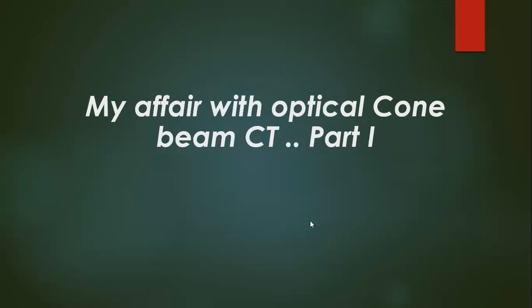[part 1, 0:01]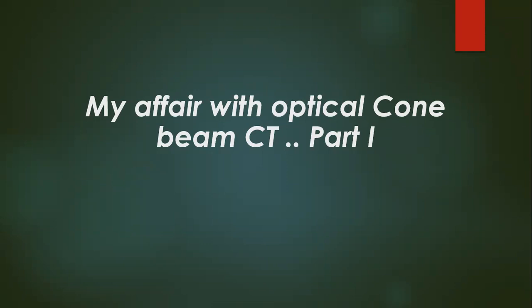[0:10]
I have been giving very serious lectures in my e-learning portal, that is the Paul's Classroom, and also in my YouTube channel. For a change, I thought I would tell you a story that is at least two decades old. The story is about how I learned gel dosimetry and how I made my first optical cone beam CT scanner for reading the dose embedded in gel dosimetry.
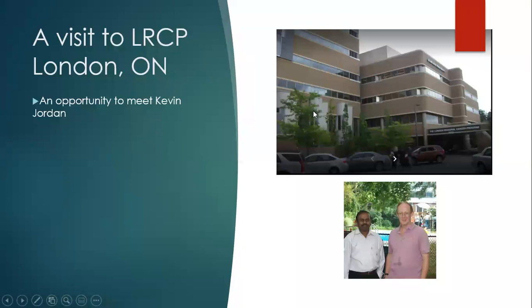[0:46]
I learned gel dosimetry during a visit to London Regional Cancer Center in London, Ontario, Canada. This is the London Regional Cancer Center that you see in the picture. In North America, the interview happens slightly differently. I was there for an interview. And the interview is slightly different from the way it happens in India.
During the interview, you are made to meet all the connected staff. In my case, I had to meet all the physics staff there. And at the end of the day, you have a formal interview with the HR staff. This is exactly what happened to me. And during the interview, I had the opportunity to meet Kevin Jordan, whom you see with me in this picture, and who was working with gel dosimetry.
He took me to his lab and showed the FX gel phantom that he had made, and also the laser scanner, as well as the cone beam optical scanner that he had made for reading the dose embedded in gel phantom.
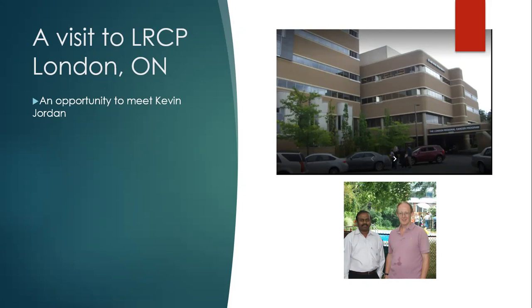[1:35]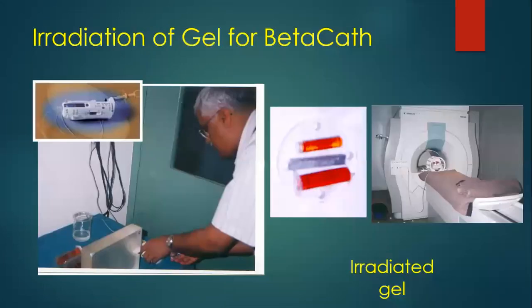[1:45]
After the interview, I returned to India, and I was very keen to make FX gel. I got the recipe from Kevin, and since we already had Fricke chemical dosimetry facility in Vellore, making FX gel was not difficult. We made FX gel and irradiated and kept on showing everyone, see the nice 3D distribution that you can see with naked eye.
Then we thought, why not we do an experiment? We took a syringe and filled it with FX gel and also put a catheter in so that we can connect to the BetaCath equipment that has the strontium 90 source in it. We irradiated this gel phantom with strontium 90 source, beta source. And then we wanted to look at the dose distribution.
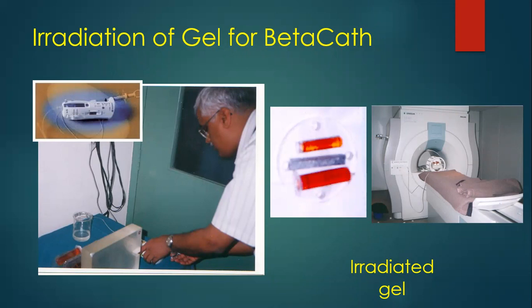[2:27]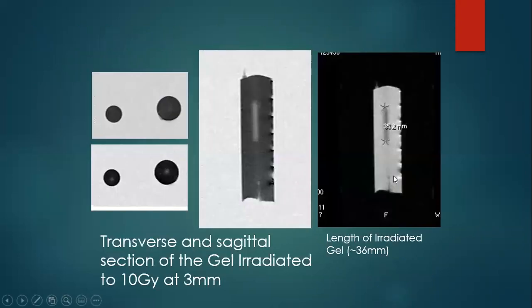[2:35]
Since we didn't have the optical scanner, we got permission to use the MRI scanner from radiology department and did an MR scan of this. We were so excited to see the dose distribution on the MR images, as you can see here. These are the transverse images and the sagittal images of the phantom.
It was a pity that we didn't know that we had to do a pre and the post scan. We did only the post scanning of the gel. It was, however, very interesting. We could measure the length and see it was correct. And I presented it in a conference in Chennai in the year 2000, and it was very well appreciated and received by the delegates.
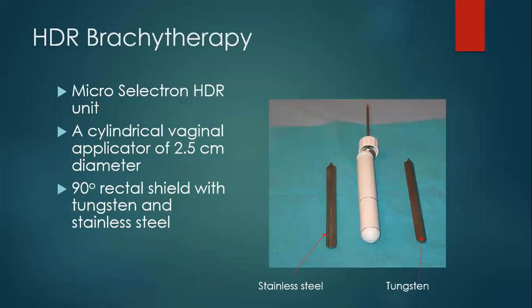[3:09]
Subsequently, I got selected at the London Regional Cancer Program, and I joined there on a two-year contract in 2001. Once I went there, I was very keen to learn gel dosimetry. I went and talked to Kevin about it. I told Kevin that I would like to learn gel dosimetry. To learn, can I be your gel maker? Kevin was good enough to agree to that.
And I will make gel and keep it in the fridge. Kevin will do some experiment and share the results with me. We both became very good friends and we continue to be in touch even today. There was a conference in Canada in which we were asked to present something. I thought, why not I present on gel dosimetry?
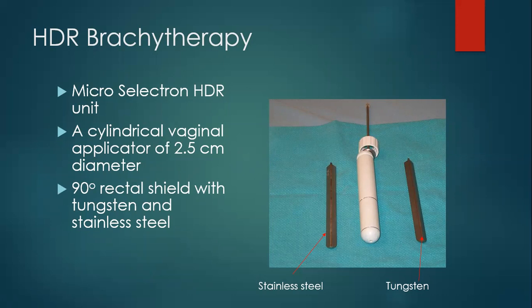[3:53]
I was the principal physicist at London Regional Cancer Center for brachytherapy. I was the main physics person in brachytherapy, and we had a vaginal mold with two different types of shields for the rectum. One was a stainless steel, the other one was the tungsten, as you can see in this picture.
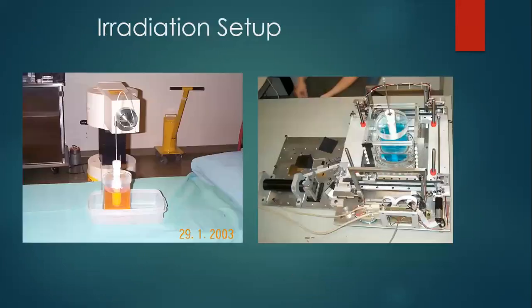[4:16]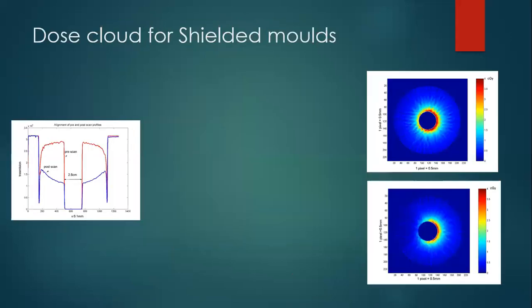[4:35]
I thought, why not we irradiate this with gel and see the dose distribution with stainless steel and tungsten. I made gel phantom and did a pre-scan with the laser scanner of Kevin with the vaginal mold fixed in the gel phantom. And then after pre-scan, I irradiated first with the stainless steel shield and then with the tungsten shield. And we got the dose distribution. You can see the two dose maps.
I have not labeled them, which is tungsten shield and which is stainless steel shield. And I'm sure from the distribution you can make out, this is stainless steel and this is tungsten. Even when I presented in the conference, I didn't label and told the delegates to find out which is stainless steel, which is tungsten.
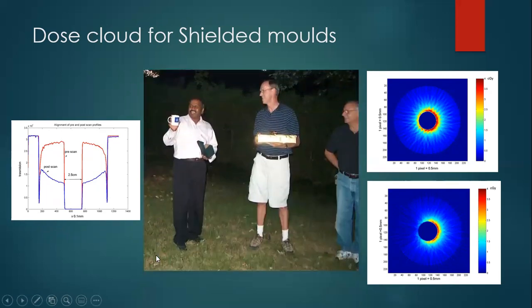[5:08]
Everybody went into a big laughter, and this work was very much appreciated. It was well appreciated that after 2 years, when I left Canada, they made a mug and printed these distributions on it and gifted that to me. You can see the mug with this distribution printed, which I still keep with me. And you can also see Jake and Jerry in that meeting, in the farewell meeting for me.
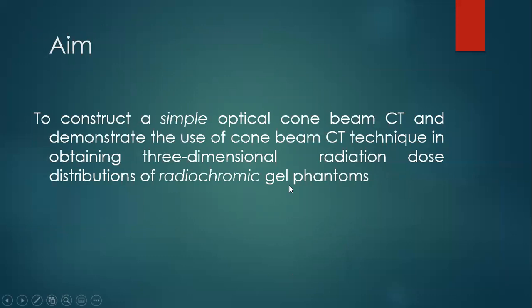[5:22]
And I returned to India again after the 2 years of stay in London, Ontario. I wanted to make a gel lab and a gel dosimetry system in CMC Vellore. Making gel was not a problem because we had already done, and we have the infrastructure to make because we had a Fricke chemical dosimeter. But reading gel was a problem.
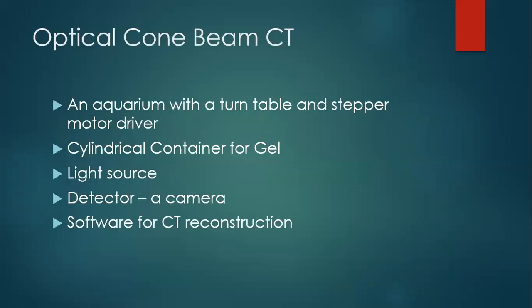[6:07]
We can't get time in MR scanner. It was something next to impossible in CMC Vellore to get time for research in MR scanner because of the heavy patient workload. So I decided to make a simple optical cone beam CT scanner. So that was my aim, to make a simple optical cone beam CT scanner. I looked at what all I need to make an optical cone beam CT scanner. I need an aquarium with a turntable and a stepper motor and a driver for it. I needed a cylindrical container for gel and a light source, and also a camera to capture the light transmitted through the gel. And of course, a software to do the CT reconstruction of the data that we acquired from the camera.
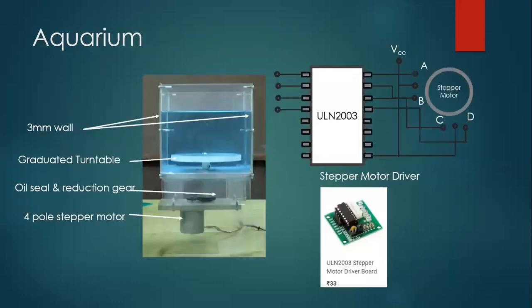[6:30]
I made an aquarium first. Making a perspex aquarium is not difficult for a physics guy because we make so much perspex phantom. I made it with a very thin wall, but I made it with a turntable, a graduated turntable, and fixed a stepper motor for it and had a stepper motor driver. Using a stepper motor was not a difficult thing for me because I had used stepper motor during my PhD days for my 2D scanner.
The stepper motor that you see here is that I dismantled from the 2D scanner, and I already had the circuit which was downloaded from the internet using ULN2003 to drive the stepper motor. It actually drives using the parallel port. You can get the whole circuit now for 33 rupees, but those days I had soldered it and it's still being used in CMC Vellore.
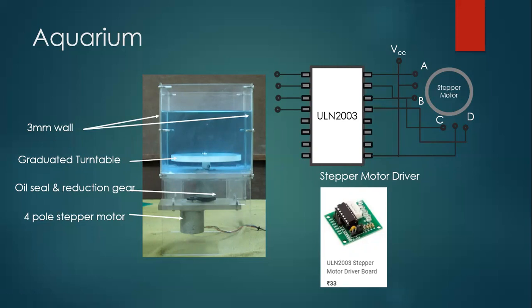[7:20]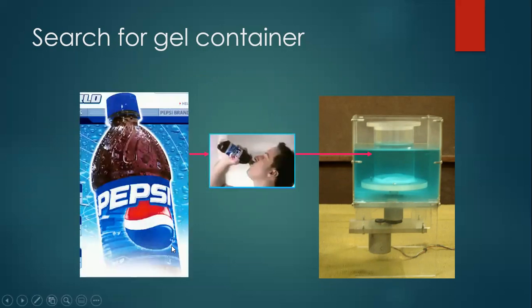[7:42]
Now that I have the turntable with the stepper motor driver, everything, the next thing I wanted was a gel container with a cylindrical phantom. Kevin used a Teflon container because he found the Teflon to be very suitable for optical scanning, but I couldn't get Teflon here. So what I did was, I went and looked at different bottles and finally found the Pepsi bottle had a plain portion at the midpoint and had some impression on top and bottom. So I cut the top and bottom, used the central portion as my gel container.
What you see is the central portion of a Pepsi bottle. I told my friends, you guys go and drink Pepsi, but come and give me the empty bottle so that I can use it as a container for my gel phantom. This we used for quite some time till the Pepsi fellows decided to change the shape of the bottle with more impressions like this at the middle without our permission, without our knowledge, and we cannot use it. Now we use some peanut bottle which was donated to us by Kevin.
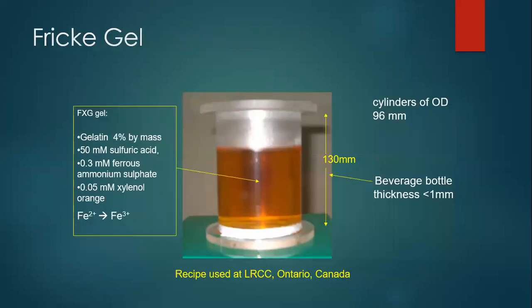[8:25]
This is what you see is the gel that we made, and this is the recipe. I'm not going to talk about the recipe now. We will discuss sometime later how to make gel. And this is the Pepsi bottle which was cut, and I put a lid on top at the bottom to
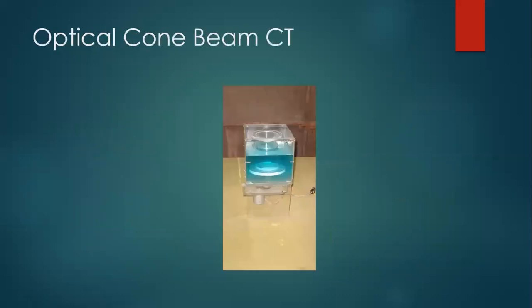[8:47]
hold the gel. Now that I have the container, the gel, turntable, the aquarium, the next thing I needed was a light source. I made a very simple light source, as you can see here. This one has got tungsten bulbs in a matrix of 9x9. And I also fixed a green filter because I wanted green light. It's not very perfect, but it's fine.
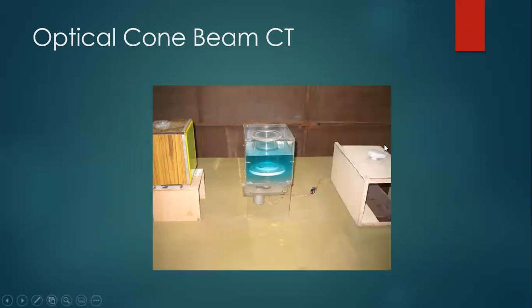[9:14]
Okay. And then I now needed a camera to capture that image. I didn't have a good camera, but I had my first webcam. I still have it. This is a beautiful camera. The webcam that I bought in, I think, London, Ontario. It had a software which can acquire the images. The software is such, you can configure it so that it acquires at regular interval.
What I did was, I synchronized the image acquisition and the stepper motor rotation so that for every degree, it acquires one image and the stepper motor rotates by 1 degree. And thus, I could get 180 images for reconstruction. Now, I have every hardware in place. I have the aquarium, I have the light source and I have the camera. Next, the only thing I now need is the software to do the reconstruction of the data collected.
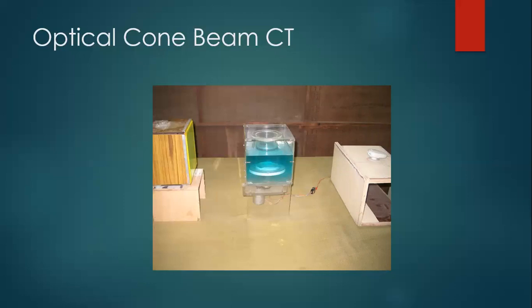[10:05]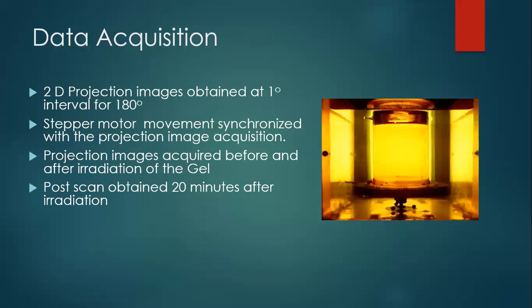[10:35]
CT reconstruction. How do I do that? I use MATLAB and the iradon function implemented in MATLAB. Iradon function is meant for parallel beam geometry, not for cone beam geometry. But however, since the cone angle is very small, I thought it's not going to make a big error, but it will certainly show you a distribution in the way we want. And I used the iradon function and developed a small code that reconstructs the data acquired by the thing.
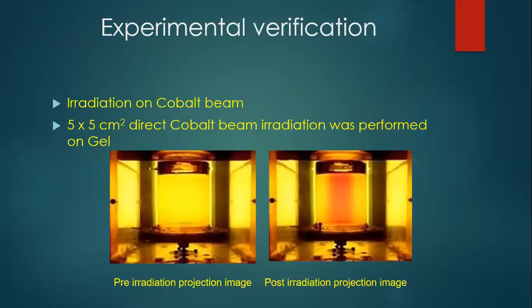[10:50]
So this is the pre-scan that you see now on this picture before irradiation, and we get 180 images of this at 180 degrees rotation. And we irradiated the gel with a 5x5 field, a direct cobalt beam. And we did the post-scan again, the same optical cone beam CT scanner, got 180 images. Now I have the pre-scan and the post-scan, both 180 image set.
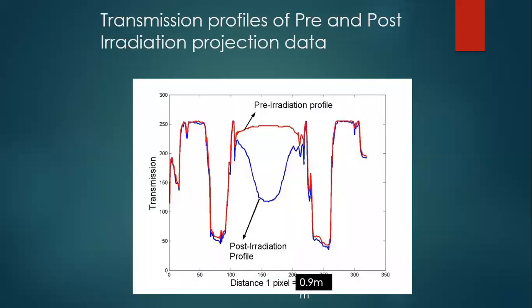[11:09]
We took only the central axis and looked at the profile at the central axis. The red one is the pre-irradiation. There is no depth. And these are due to the wall. Okay, and the blue one is the post-irradiation. The dip you see is the light absorption in the irradiated gel, right? So now I have the pre and post. I can do the reconstruction. I have a software, MATLAB.
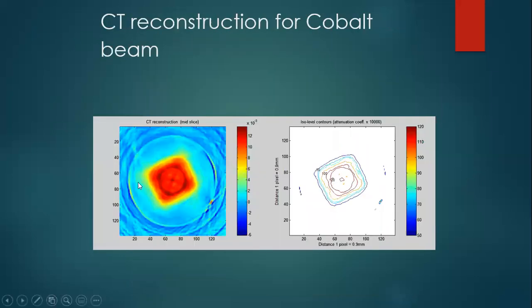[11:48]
I used the iradon function, but I took the ratio of this negative log of I by I naught and then did the iradon transformation to get the dose distribution. To a great surprise, I got the same 5x5 field here. Beautiful, right? And we were so excited about it. We could also get the dose map using the MATLAB.
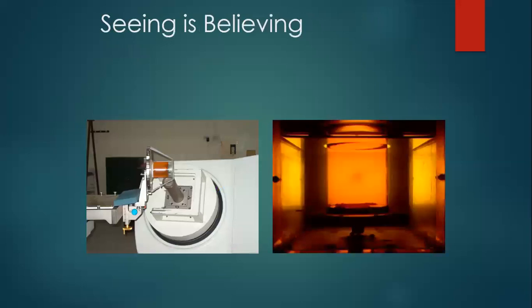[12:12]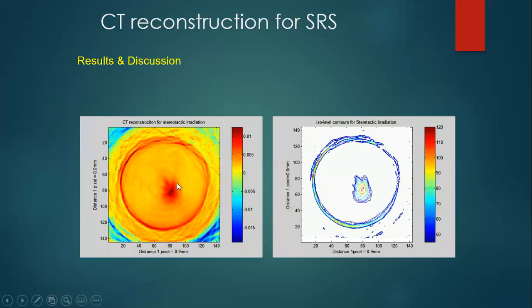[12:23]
Now that we got all this, we can't stop there. We did a radiosurgery plan and irradiated the gel to a very small beam using the narrow beam collimator and did a scan of that. You can see that this is the radiosurgery plan being irradiated. And you see, this is the dose. And we reconstructed using that optical cone beam CT scanner, and we can see the dose distribution. There are some artifacts, not very perfect with my simple optical cone beam CT scanner, but I think good enough to learn what is optical cone beam CT scanner.
So this is the story about my first optical cone beam CT scanner. I presented it in a Dosgel conference in Belgium, and they were really impressed by the way we used very simple means to develop the optical cone beam CT scanner.
Now we have a very good upgraded one with a 540 nanometer light source, an industrial camera, an FDK based cone beam reconstruction algorithm that our own students wrote. And we also implemented CUDA so that we can do parallel processing. The entire gel phantom, 400 slices, can be reconstructed in less than a minute. And we also calibrated it for dose, and we could export it to DICOM format to the Mephisto software and compare with the TPS,
